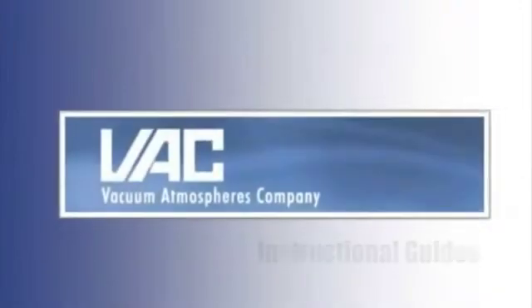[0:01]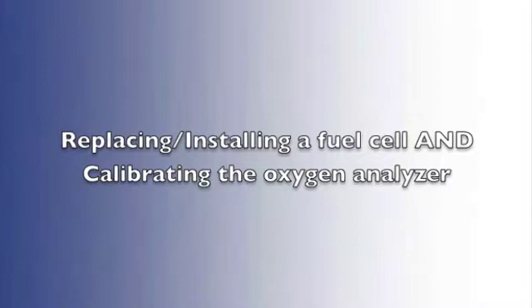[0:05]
King Henry.
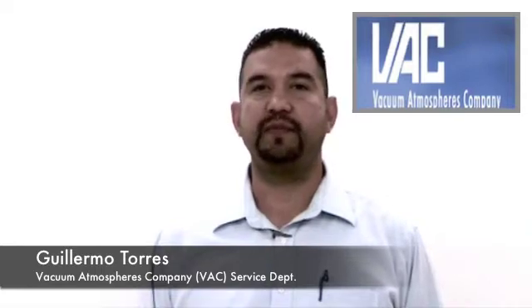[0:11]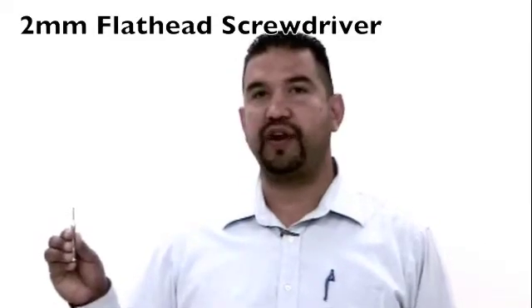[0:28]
Hello, my name is Guillermo Torres, and I am with Vacuum Atmospheres Service Department. Today we are going to show you an instructional video on how to remove and install a new oxygen fuel cell, and how to calibrate the oxygen analyzer on our inert atmosphere Nexus 2 glove box. A 2mm flathead screwdriver will be required for the calibration process.
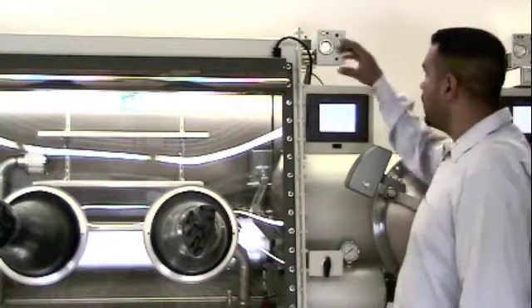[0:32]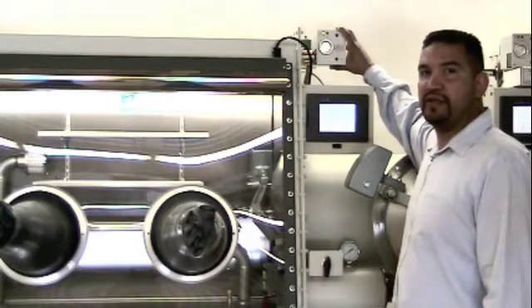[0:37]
Some of the features of our oxygen analyzer are that it's not susceptible to hydrocarbons, and it will not display false low readings. It is specifically designed for oxygen, and a key feature is that you can calibrate it.
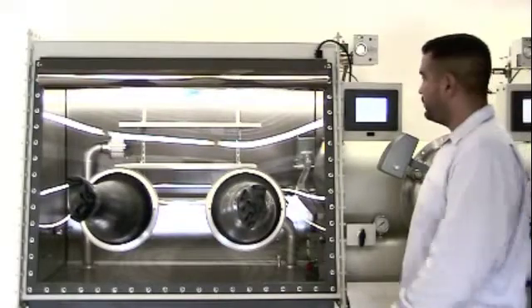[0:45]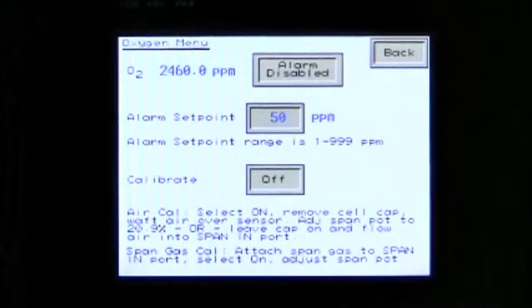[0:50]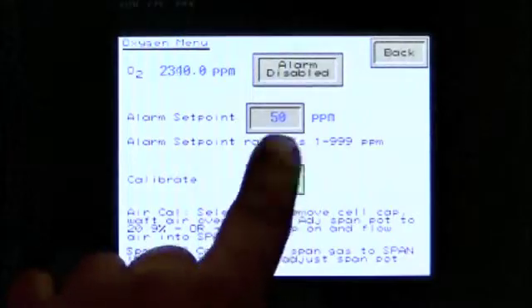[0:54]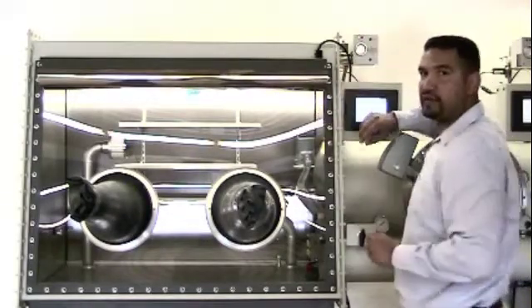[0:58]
To begin, enter the oxygen menu. From this menu, activate and enable the calibration routine. Enabling the calibration routine isolates the cell block from the glove box, and at this point it is safe to proceed by removing the fuel cell cap by turning it counterclockwise.
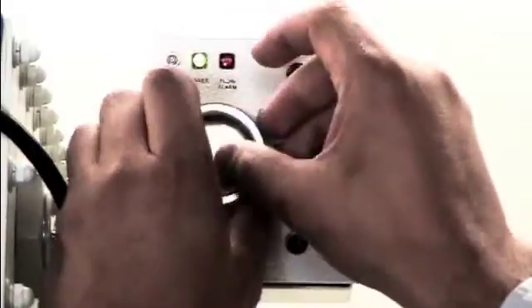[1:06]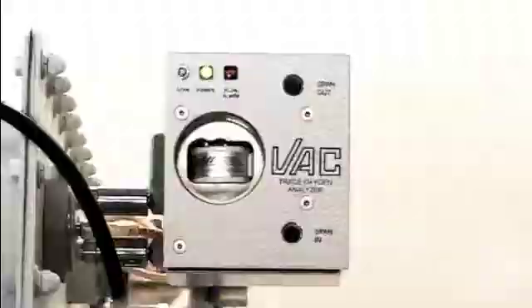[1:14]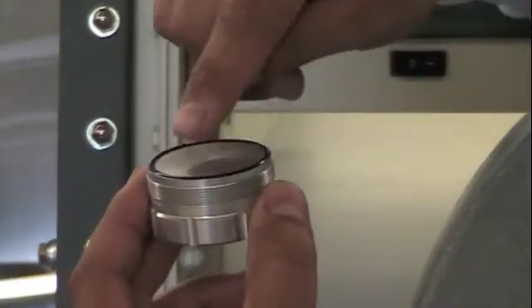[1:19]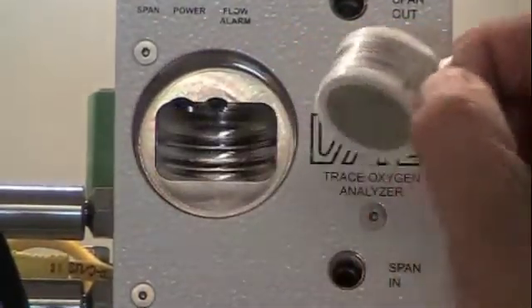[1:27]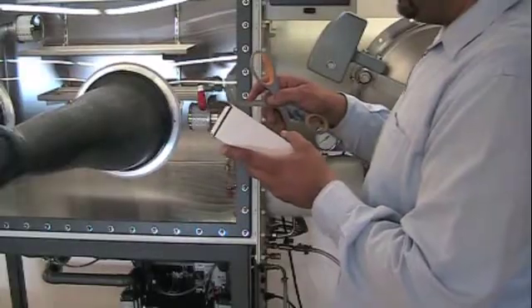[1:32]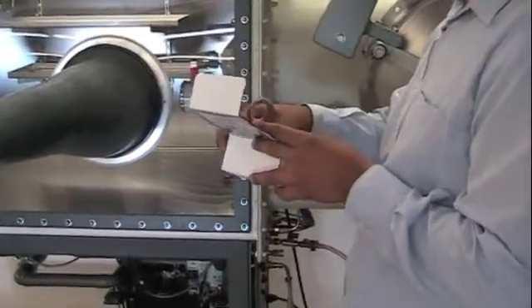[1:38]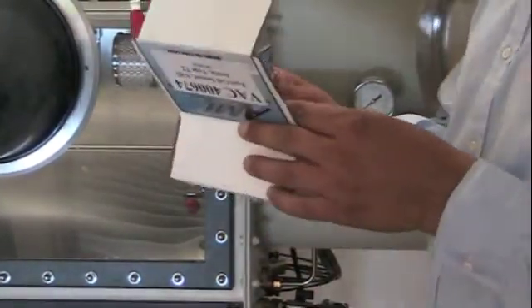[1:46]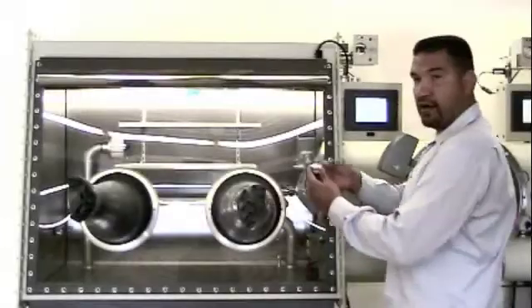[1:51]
Visually inspect the fuel cell cap to ensure that the sealing O-ring has not fallen. Remove the old fuel cell, pull straight out. And then remove the new fuel cell from the packaged material. Remove the shorting clip by pulling it straight out.
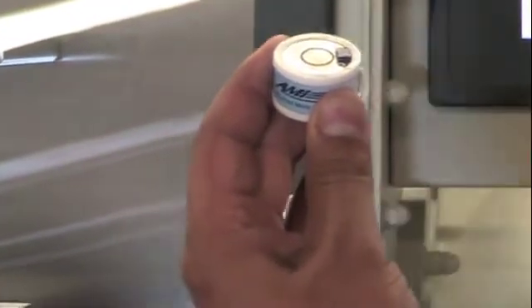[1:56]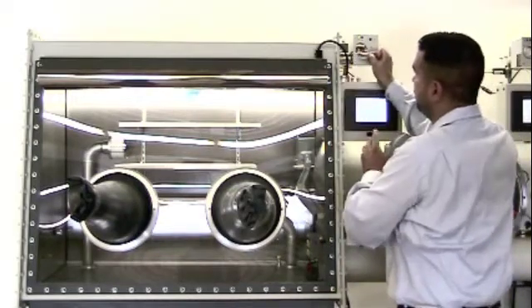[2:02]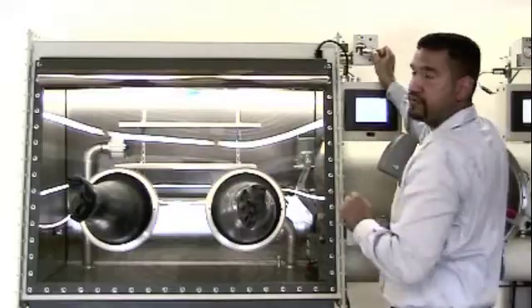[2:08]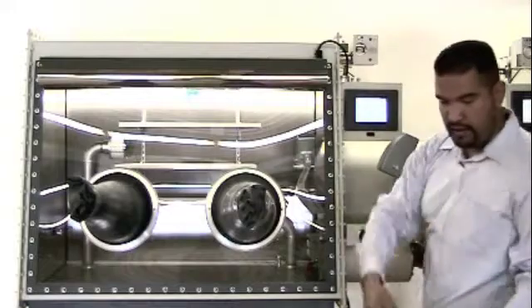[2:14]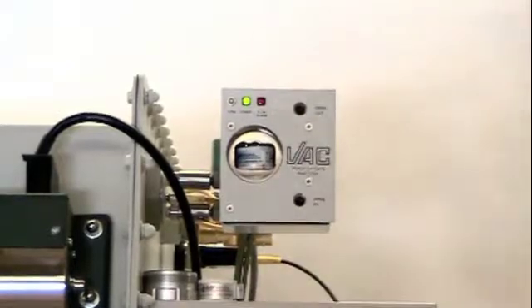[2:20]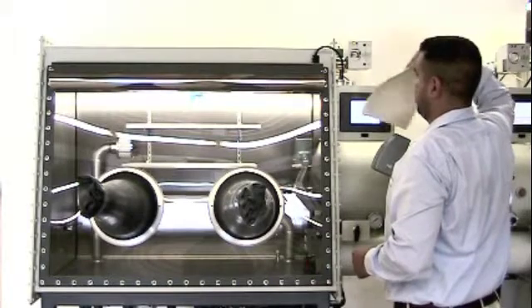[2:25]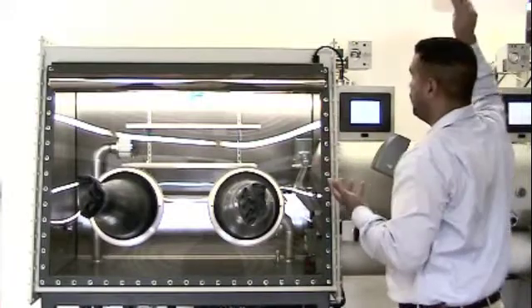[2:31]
Insert the new fuel cell, positioning the brown connector facing up and towards the right, away from the fuel cell connector pins. Once you have installed the new fuel cell, begin airing it out. You will see the oxygen readings increase, and that is fine, it's normal. Continue airing the fuel cell until the oxygen readings stabilize.
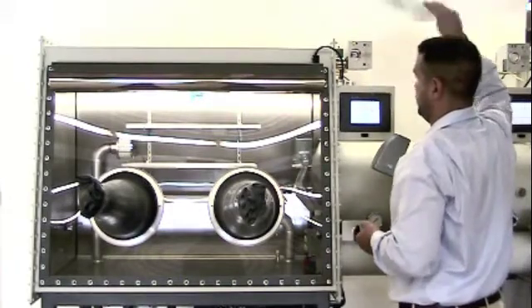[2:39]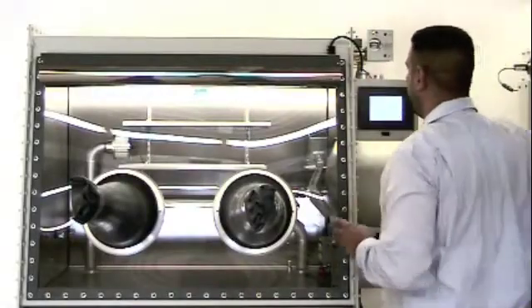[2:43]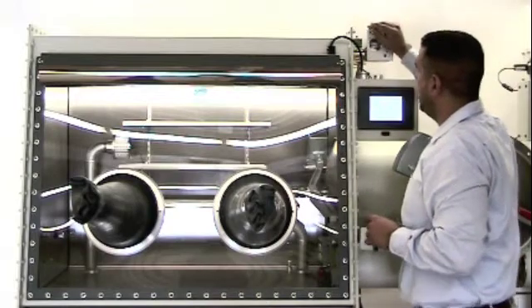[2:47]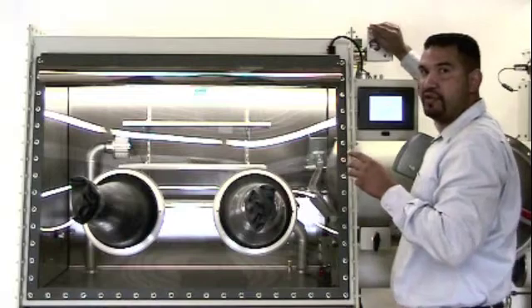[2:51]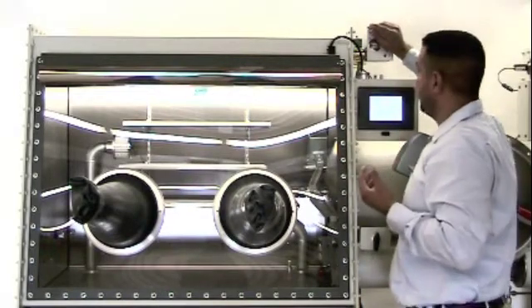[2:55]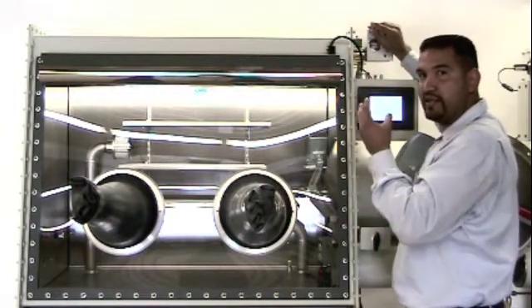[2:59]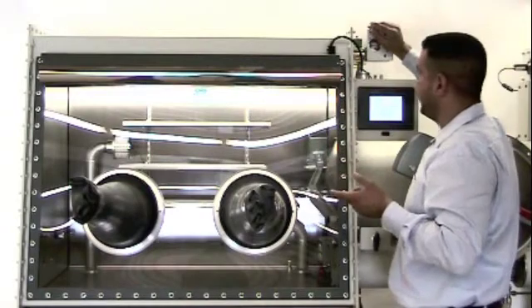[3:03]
Once the oxygen readings have stabilized, adjust your span potentiometer to 20.9%, which is the amount of oxygen in the air that we breathe. Turning the span potentiometer clockwise increases, whereas counterclockwise decreases.
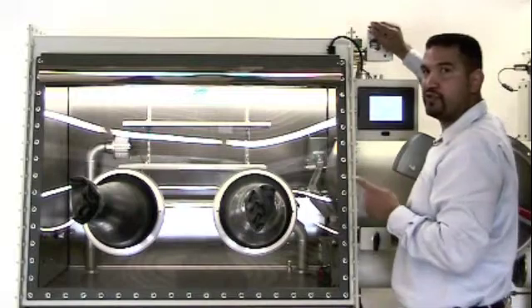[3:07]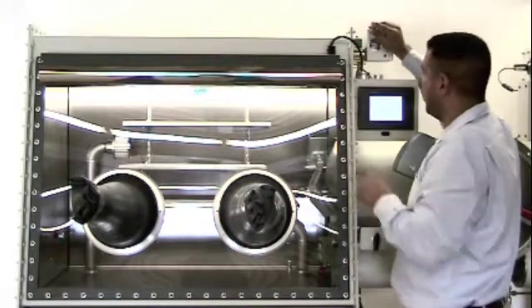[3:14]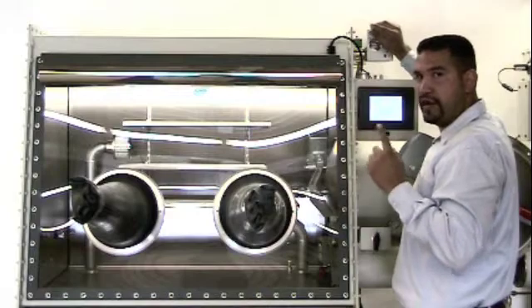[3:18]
In this situation here, we're at 30.2%, so we're pretty high up there. So we want to turn counterclockwise to decrease that reading. Once again, our target is 20.9%, and we are turning here counterclockwise.
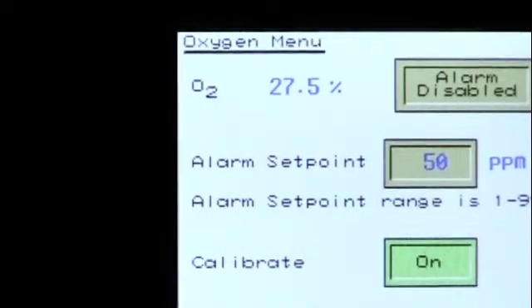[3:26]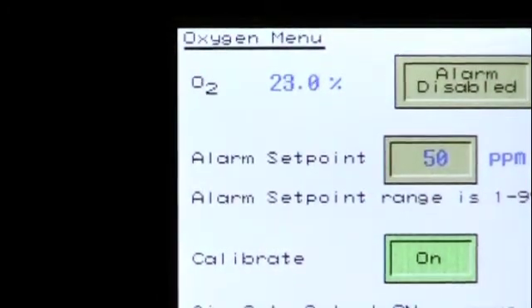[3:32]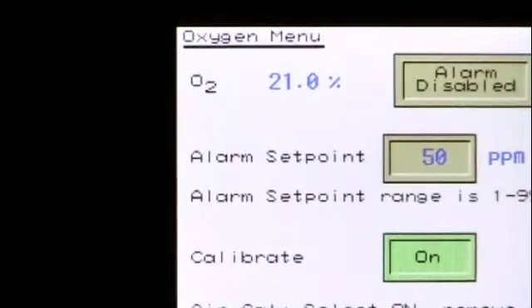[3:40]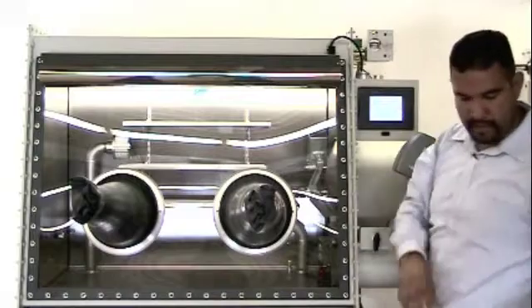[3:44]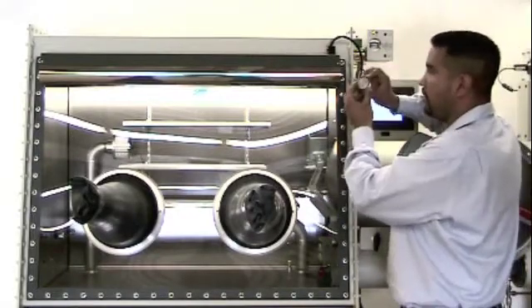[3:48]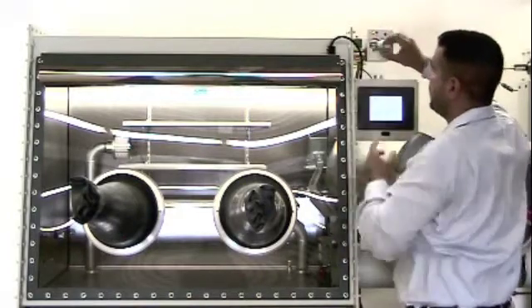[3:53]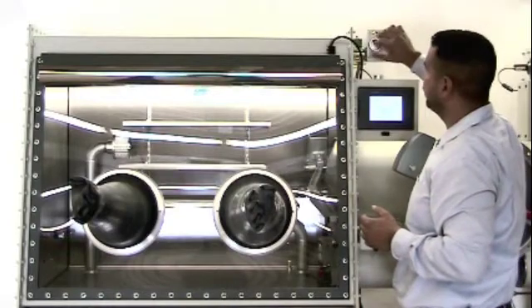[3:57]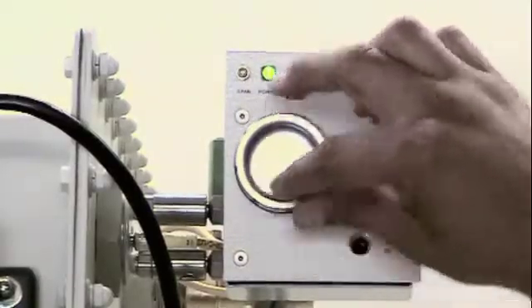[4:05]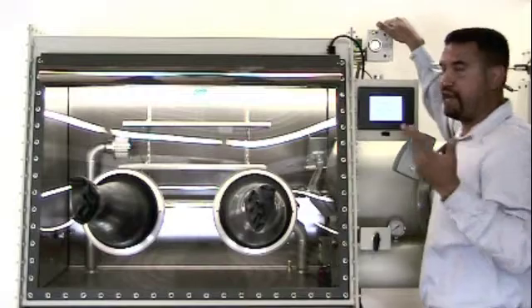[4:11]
Once you have made your adjustment, reinstall the fuel cell cap onto the oxygen analyzer cell block by turning it clockwise and tighten by hand. No tools should be used in this process, aside from the 2mm flathead screwdriver for your span adjustment.
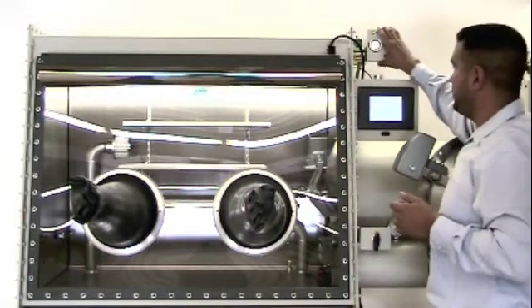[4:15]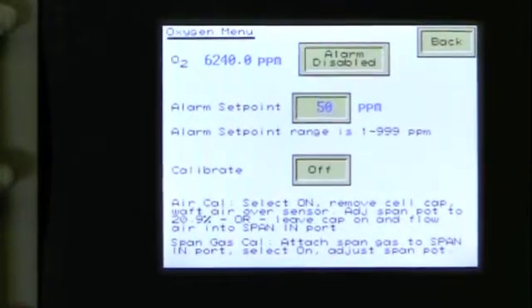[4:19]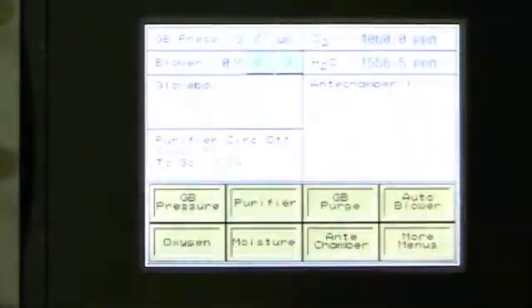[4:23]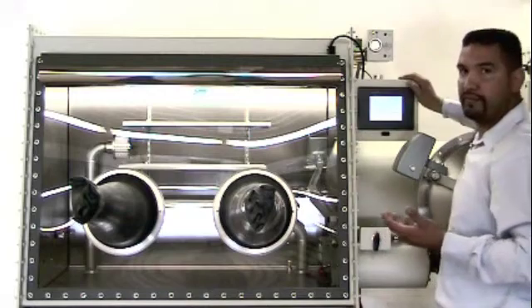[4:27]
Once you've made your adjustment, simply deactivate the calibration routine and press back to return to the main menu. You should now observe that the oxygen readings are trending down, and that is how you calibrate the Nexus 2 oxygen analyzer.